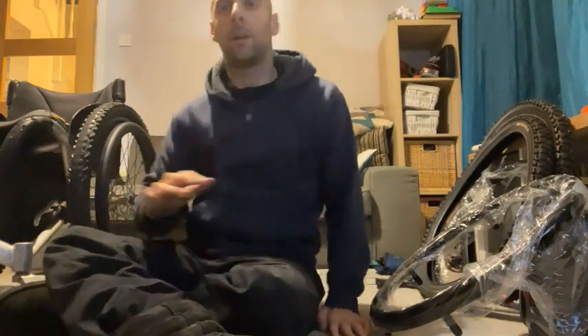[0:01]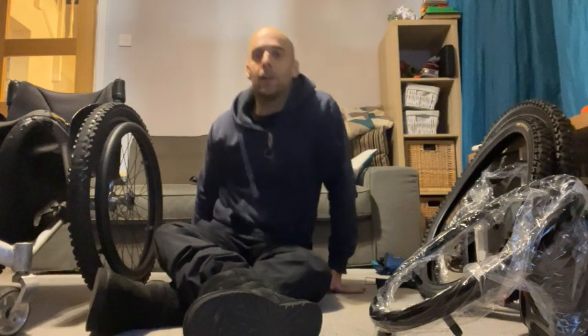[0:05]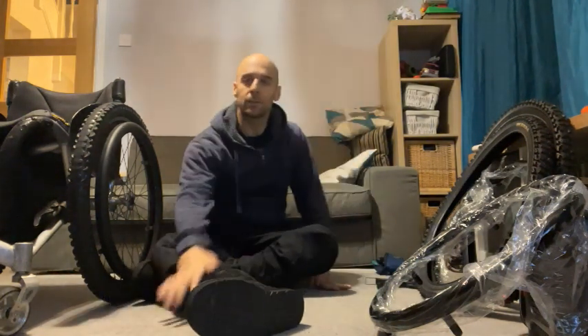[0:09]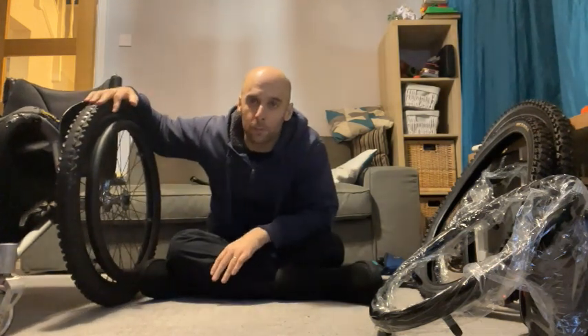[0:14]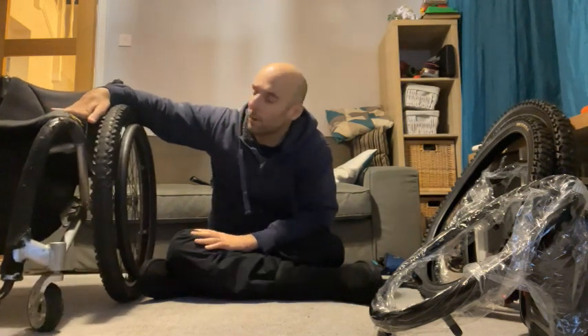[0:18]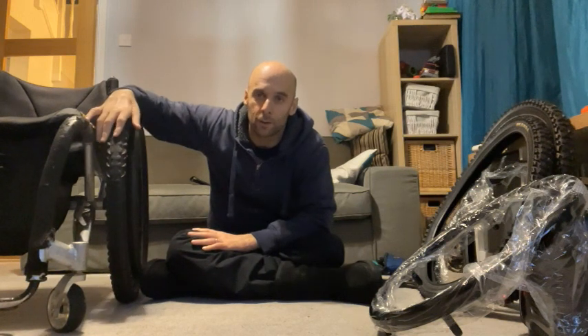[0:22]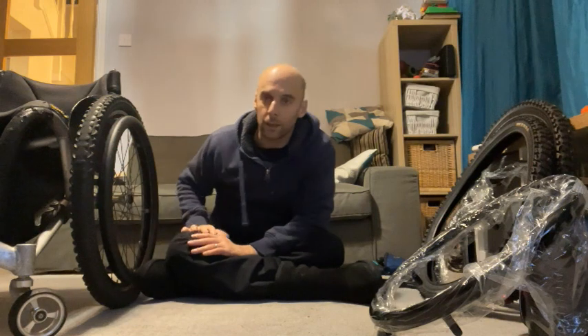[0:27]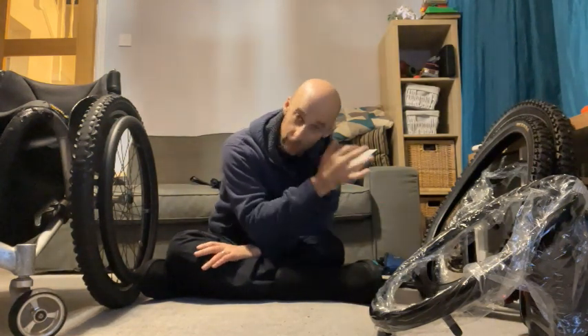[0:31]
Now, I've had a few inquiries whenever I post videos of myself in my wheelchair about the type of tyres and push rims that I put on my chair. So I've had these on for about 4 years now, and if you look at them closely, they're really worn. The tyres have had a good innings, but they're time to go. And there's a couple of little tiny nicks on the push rims, so I'm going to change both of them together. Got all the things that I need here to change them.
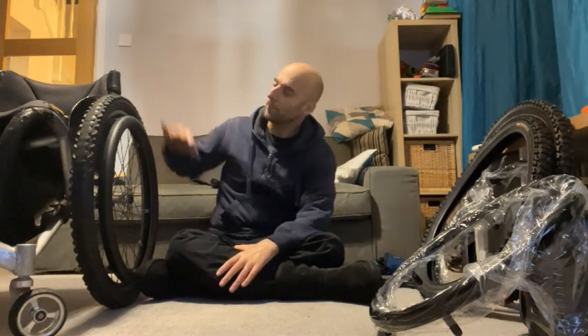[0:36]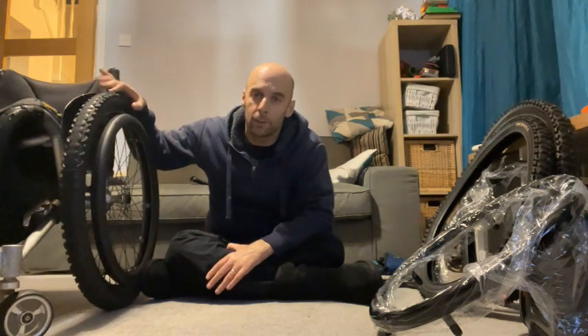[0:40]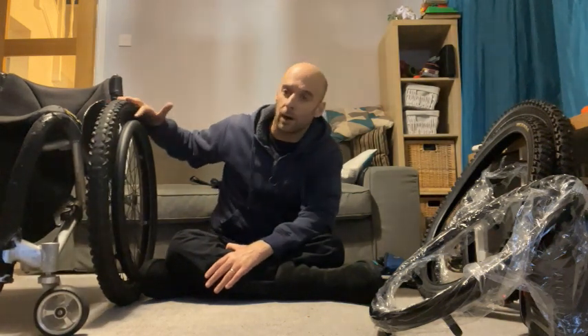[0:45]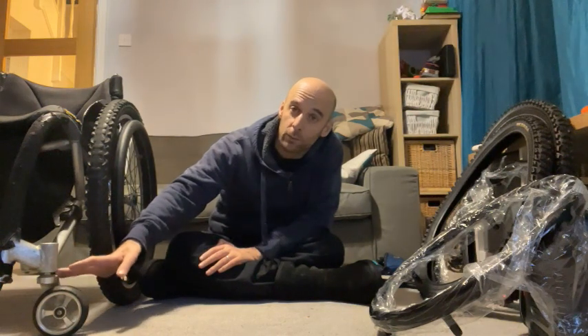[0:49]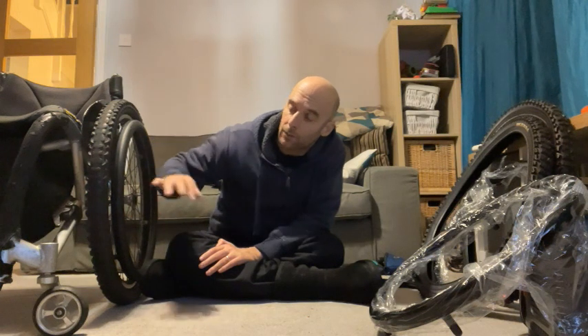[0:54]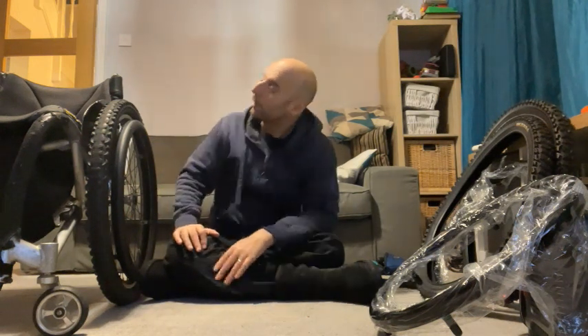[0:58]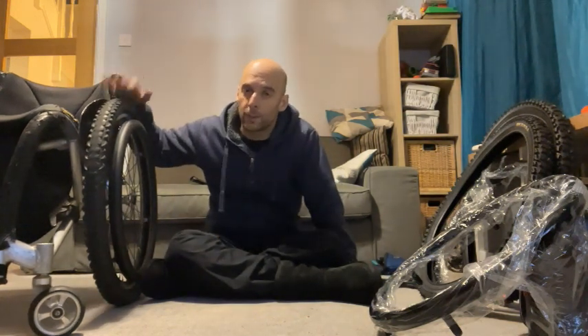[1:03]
A few people have asked what I use. So you can't just put a normal big knobbly chunky mountain bike tyre on a normal wheelchair, because if your chair is set up for a 24-inch tyre, then the casters, this bit here, need to be completely horizontal to the floor. Otherwise you're going to be angling the front casters down, and as soon as you get any speed you're going to get a really big wobble on the front wheels, or it's just not going to track properly. So you can't just buy a normal mountain bike tyre, which is normally a 26-inch. So you have to find 24-inch tyres.
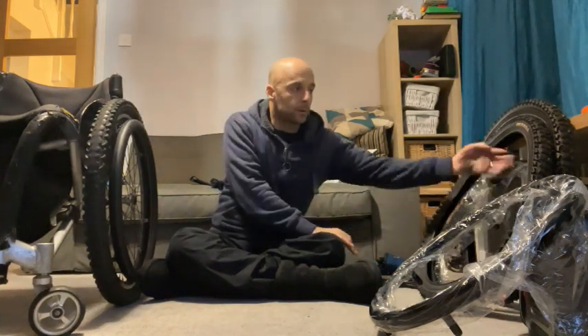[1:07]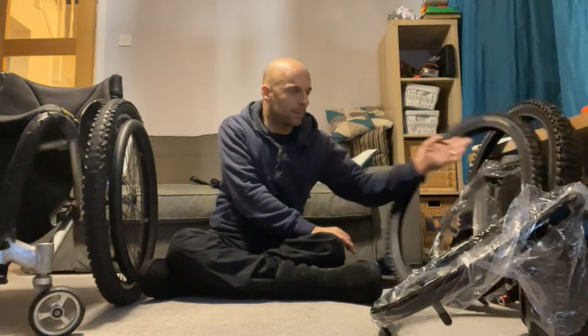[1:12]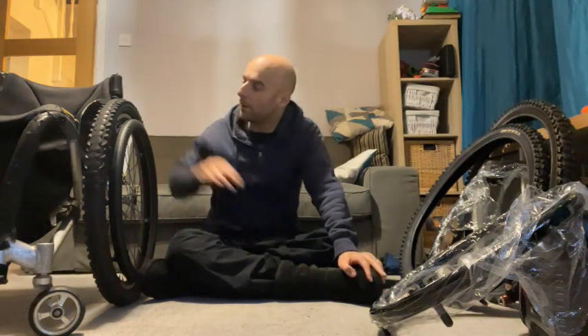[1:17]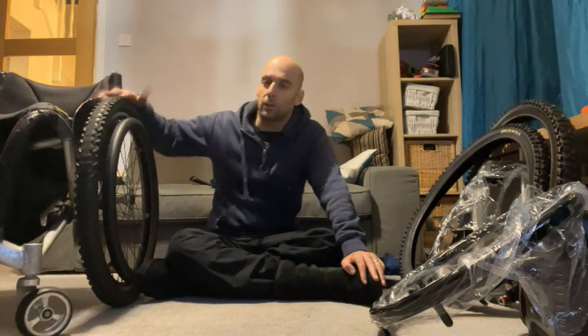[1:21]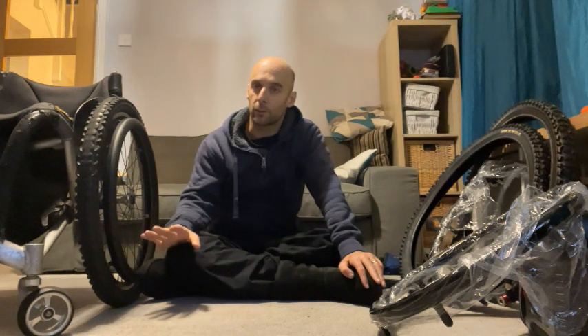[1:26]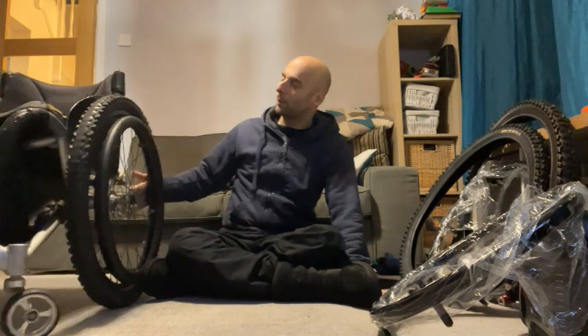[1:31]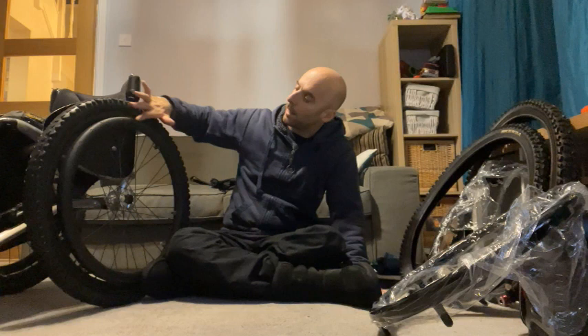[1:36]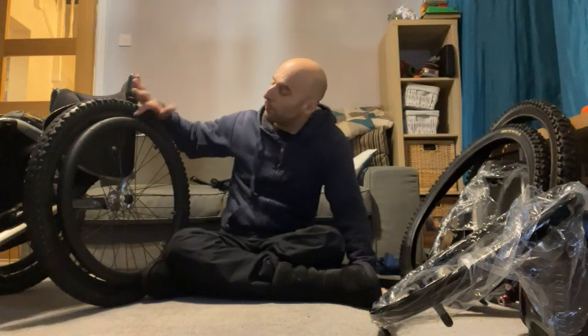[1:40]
So the ones I've got here with me are called Kenda. I think they're called a Kenda Space, but they are a 24 by 1.95 inch tyre. This will mean that the outside diameter is going to be 24 inches, so it's still going to work properly with my casters the way that they're set for a 24-inch tyre. The difficulty is that with a fatter tyre instead of a narrow one, you can't go for the same rim of the wheel. So you have to get the right size wheel rim for this tyre.
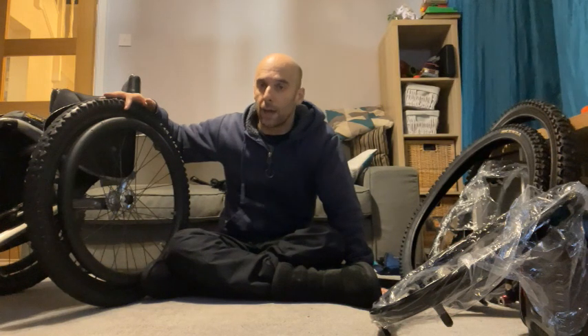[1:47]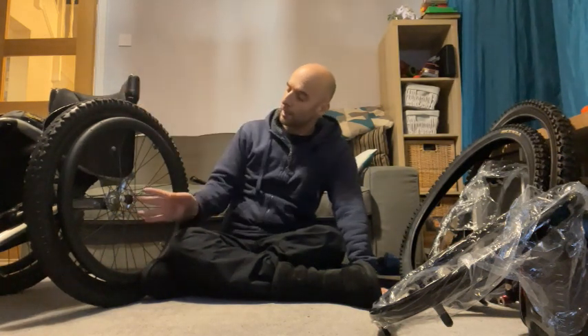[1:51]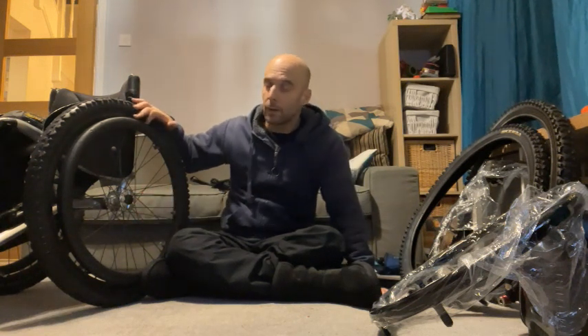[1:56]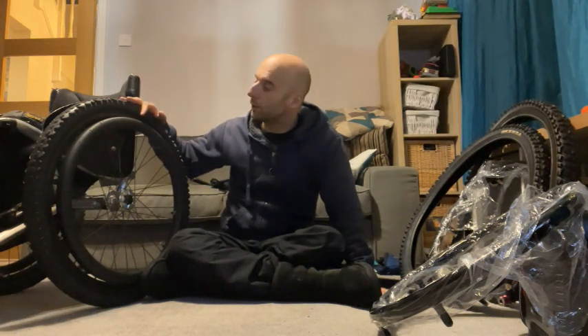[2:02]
Now it would vary on what rim type you get, dependent on what type of tyre you get. So you're going to have to speak to the bike shop about that one. You can take in your hub and you can take in your tyre and push rim, and you should be able to get a bike shop to put the right wheel rim on to fit the tyres that you want to use. But you need to get this size right.
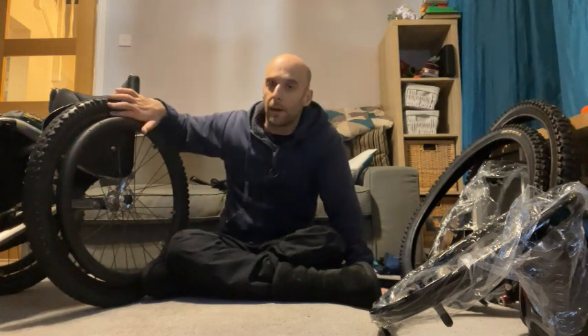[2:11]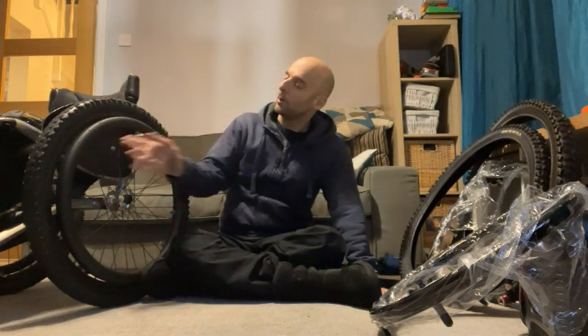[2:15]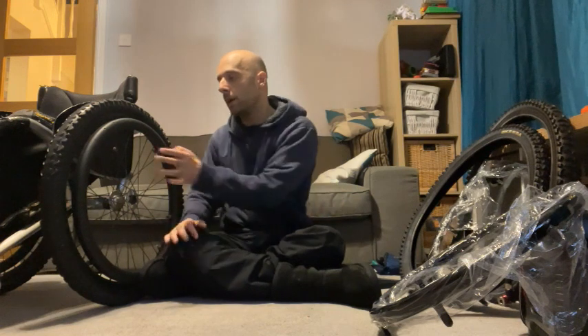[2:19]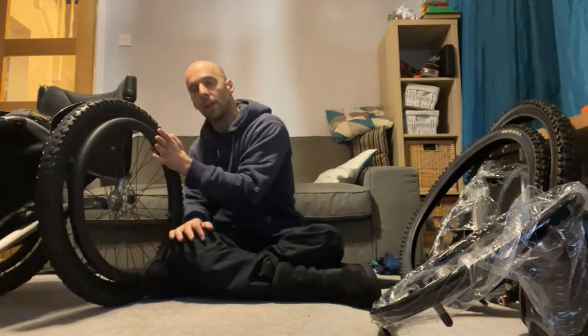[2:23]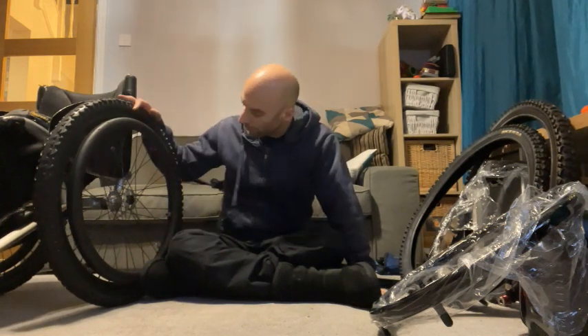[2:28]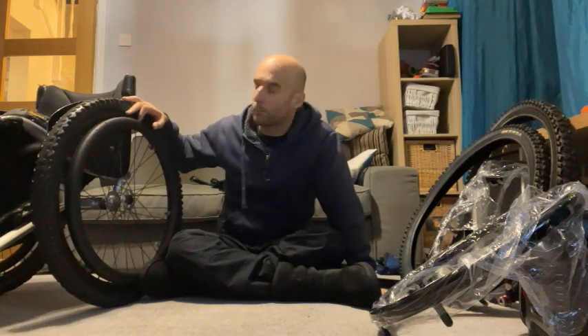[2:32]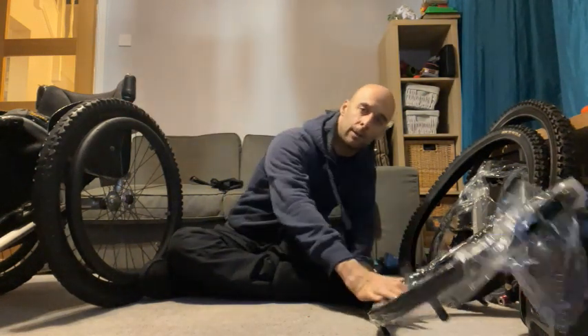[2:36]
I'm also using a Carbolife Tetra Curve L for my push rims. I really like these ones, they're the best ones I've found. They're a non-circular cross-sectional area push rim. It means you get a lot more grip pushing down this way, and also on the braking surface, which is a bit more flat here and is a bit wider. So I've found that they work really well. I've had these ones for about 4 years now, and they've got a couple of little nicks in from where I've just caught the skirting boards and the door frames, that kind of thing. So I'm going to change those at the same time. That's what I've got here.
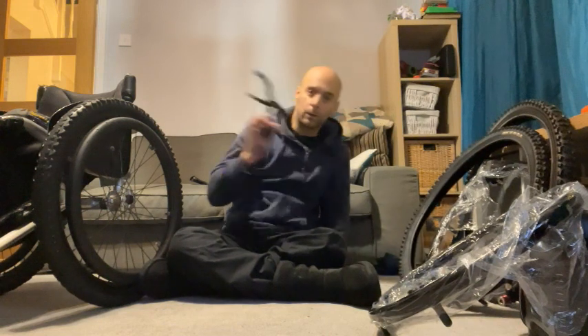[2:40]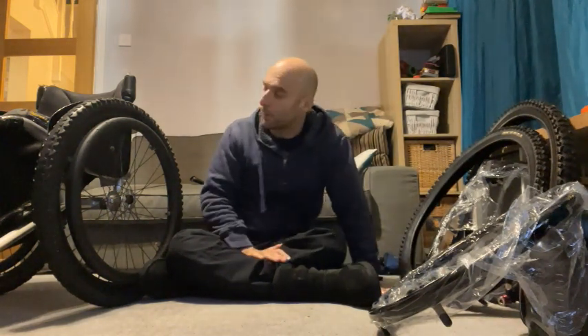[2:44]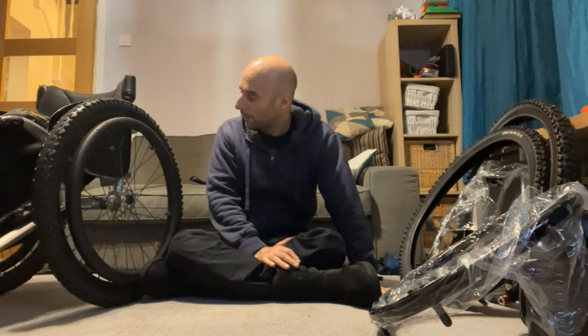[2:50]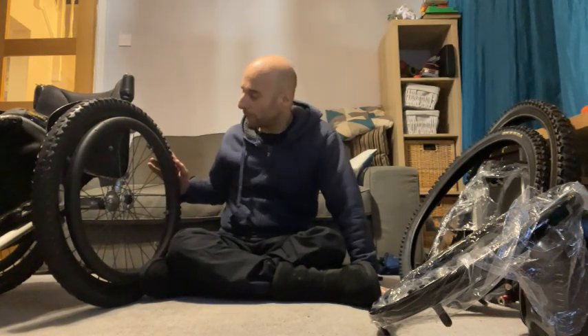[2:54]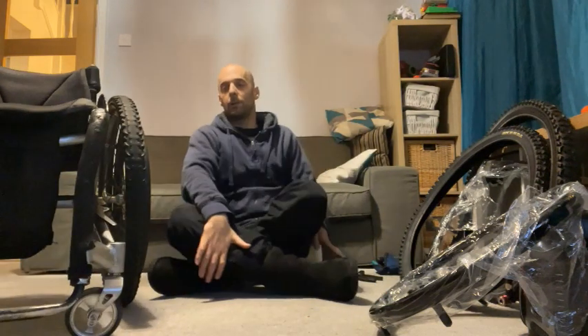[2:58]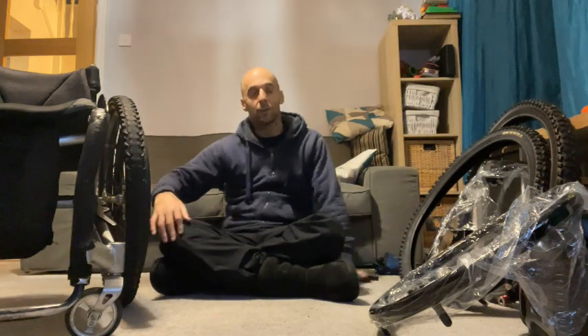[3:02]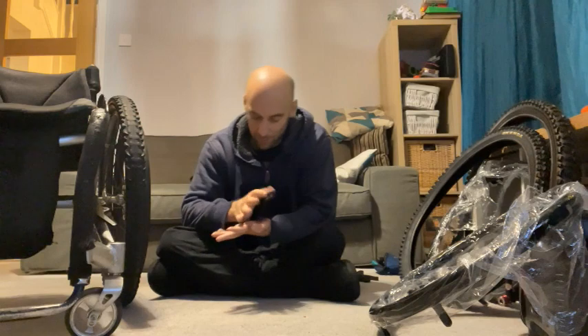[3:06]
Got my compressor, got my tools, got my tyre tool here. I'm going to put the TV on. It's going to take me a while, and I'm going to hopefully get through this on both wheels, and you can watch me do the whole process. And hopefully we'll have some new tyres on, which will work well, and some new rims, which will be nice for the new year. Right, off we go. Excuse me if I put the TV on in the background, but I expect a lot of this will be fast forwarded because nobody wants to watch this at normal speed.
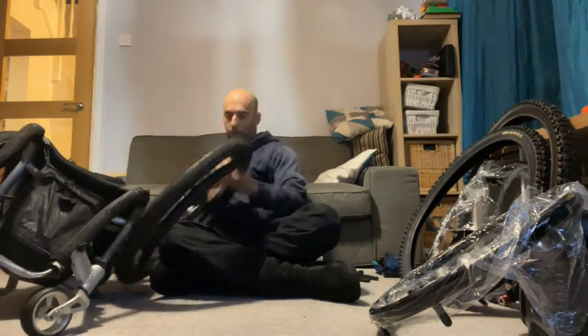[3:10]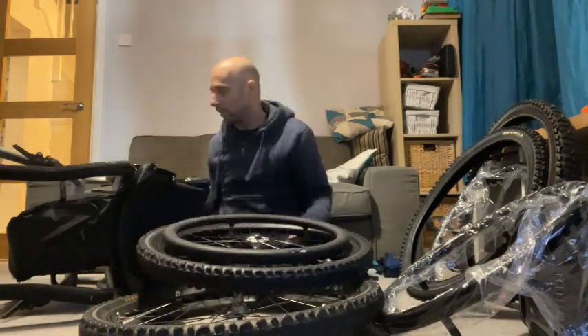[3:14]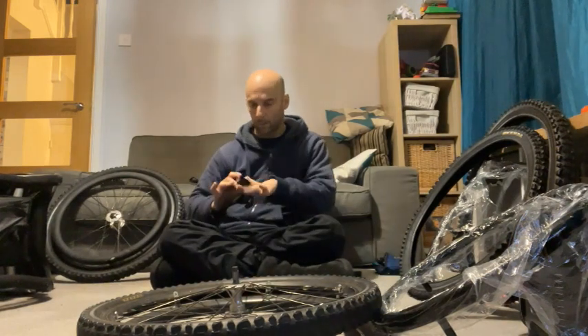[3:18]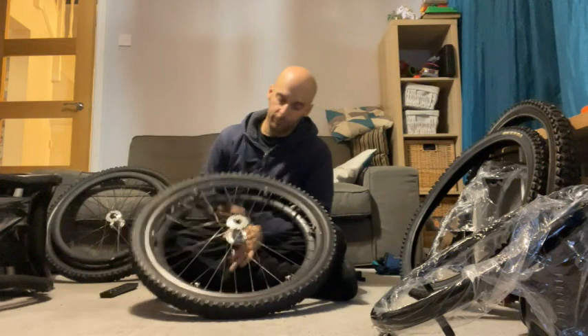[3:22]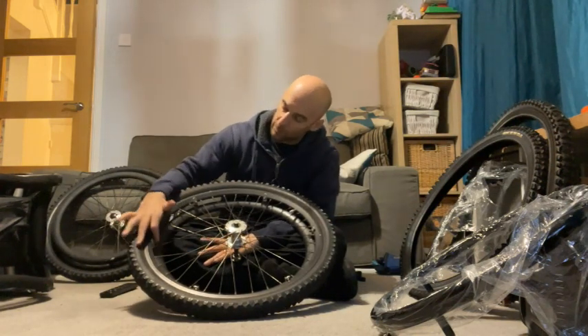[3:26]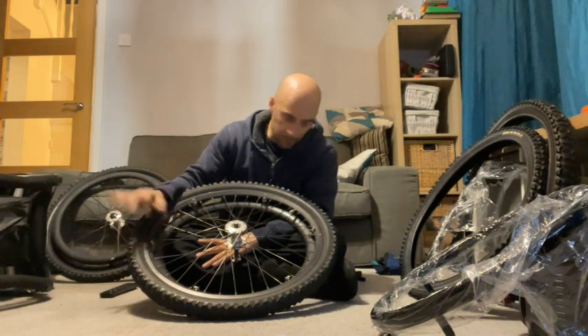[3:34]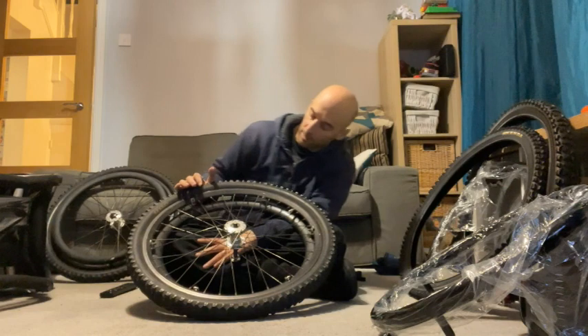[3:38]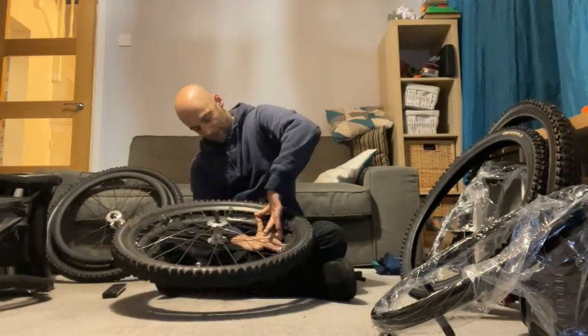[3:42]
Right, we have to start by deflating this tyre, taking off the tyre so we can get at the rim on the inside, because you'll need to get to the bolts on the other side of this wheel rim. So the whole tyre is going to have to come off, and the inner tube, and then we're going to have to undo these bolts, take them out, put the new ones on. It's quite a complex and time consuming process, but hopefully it'll all work fine. It's not the easiest thing when your hands don't work very well.
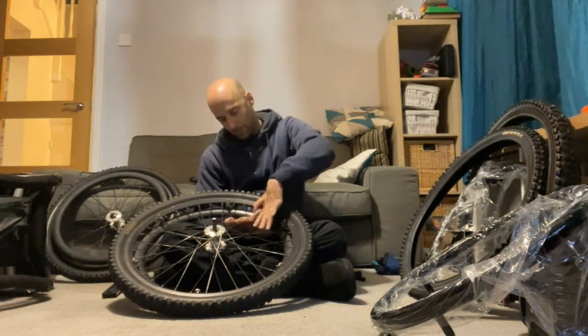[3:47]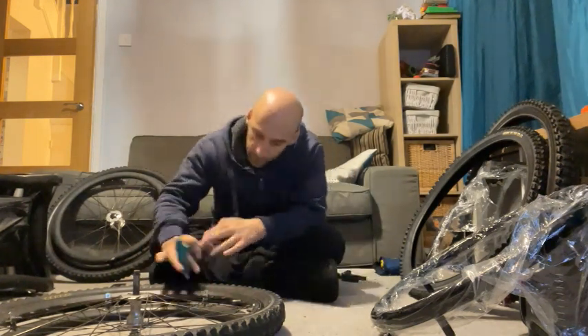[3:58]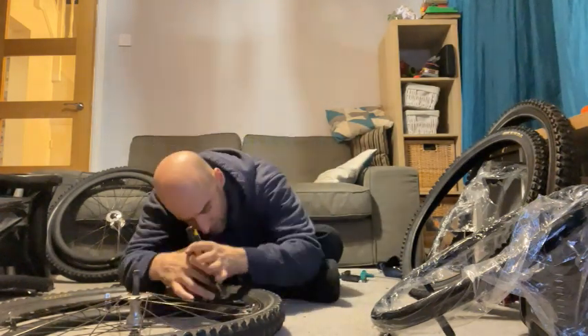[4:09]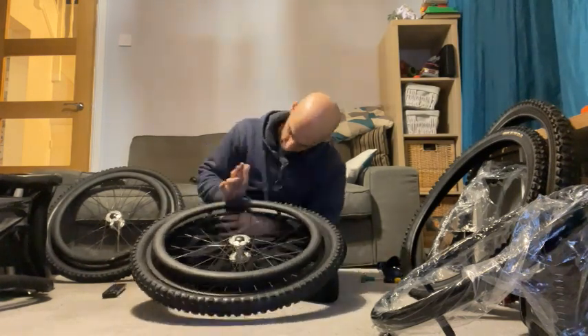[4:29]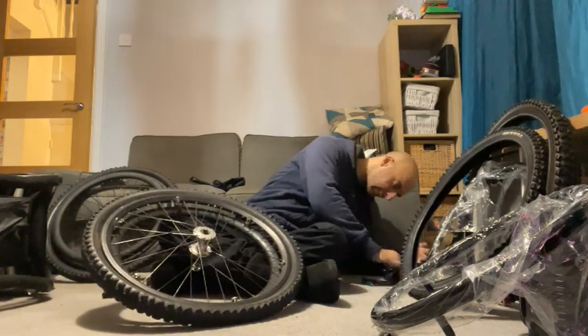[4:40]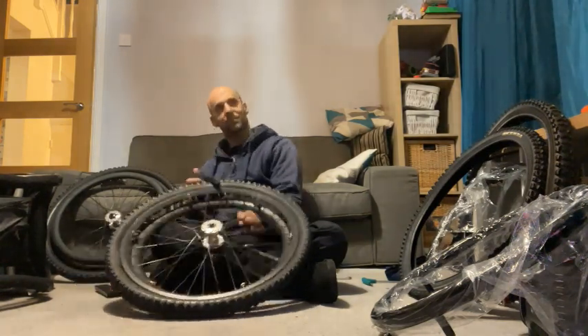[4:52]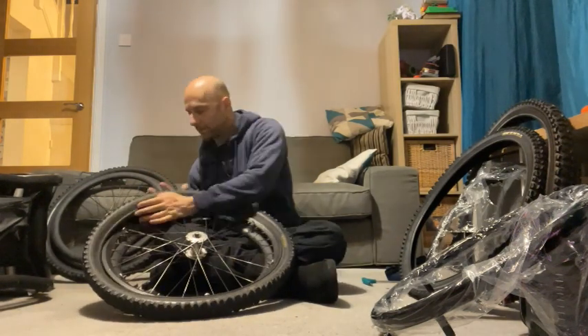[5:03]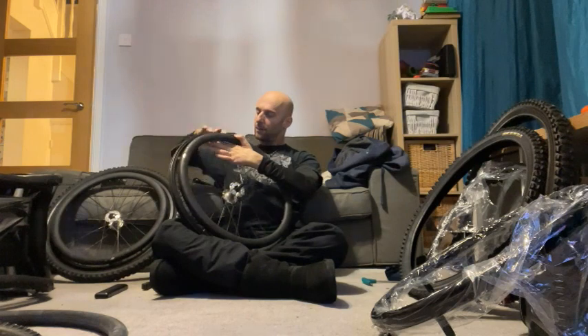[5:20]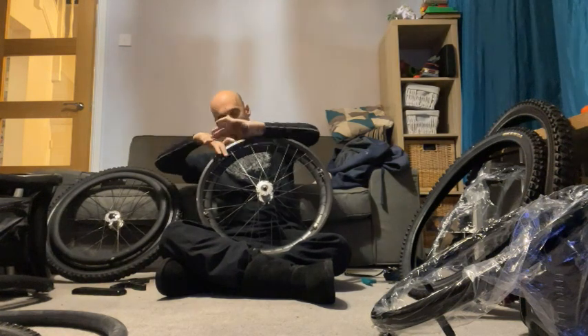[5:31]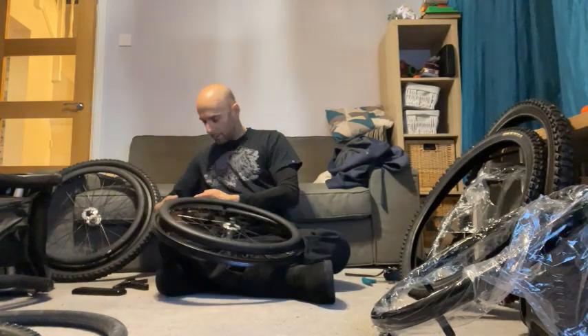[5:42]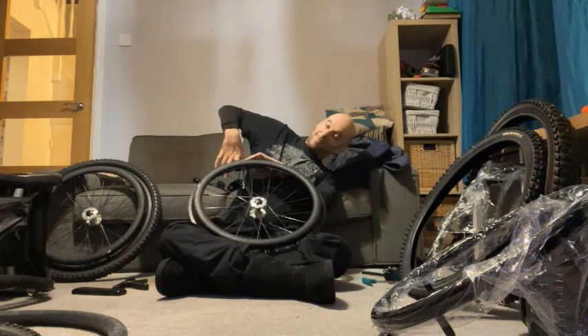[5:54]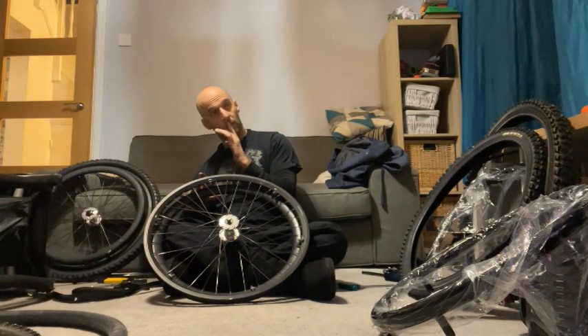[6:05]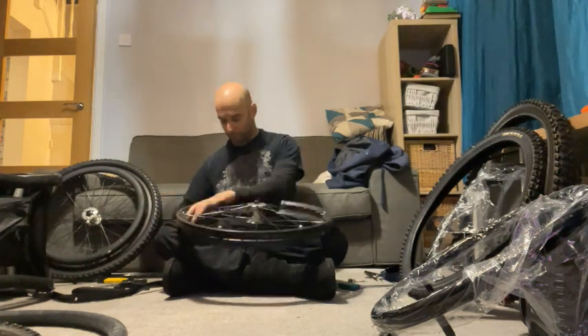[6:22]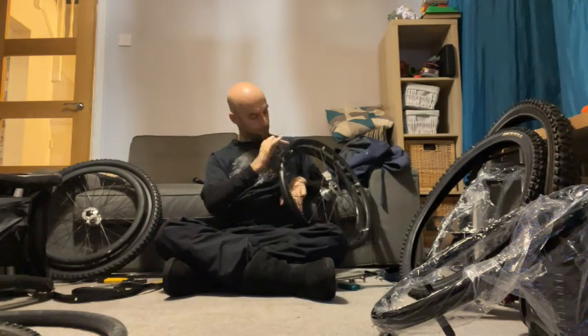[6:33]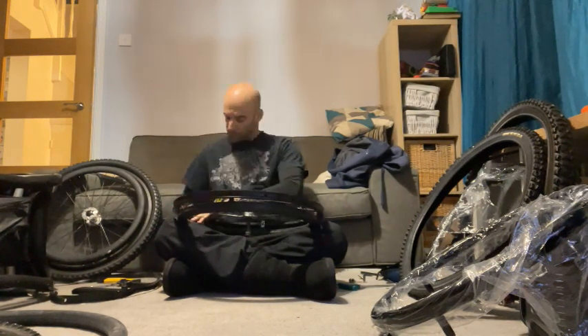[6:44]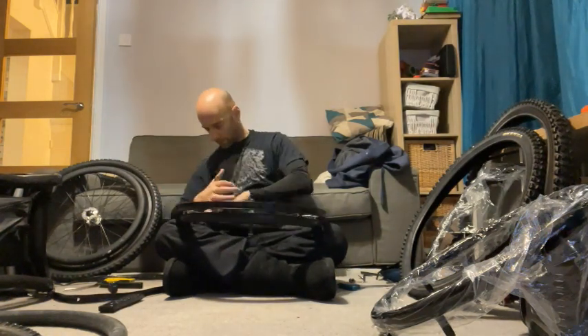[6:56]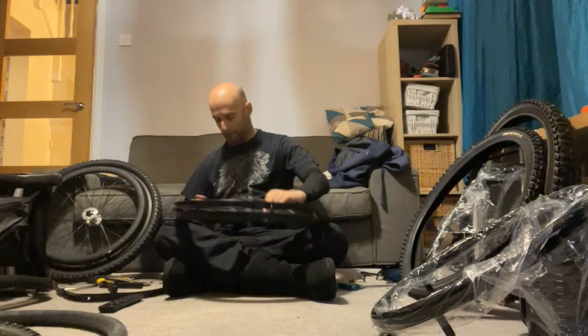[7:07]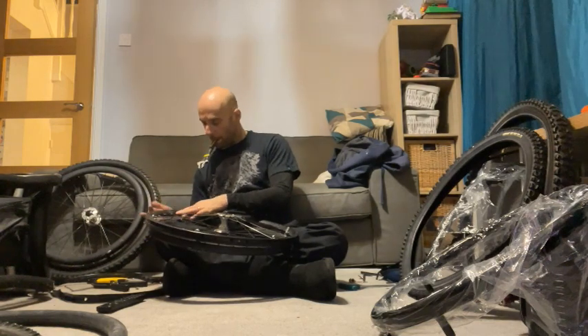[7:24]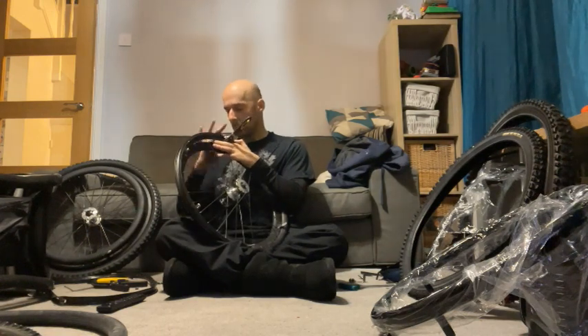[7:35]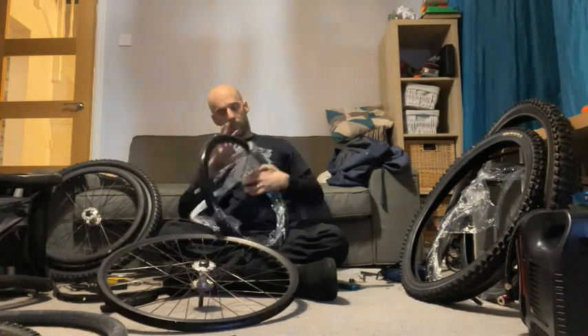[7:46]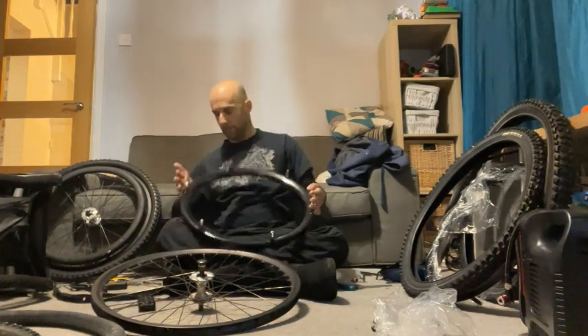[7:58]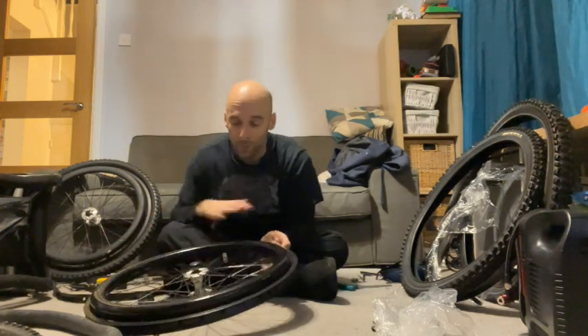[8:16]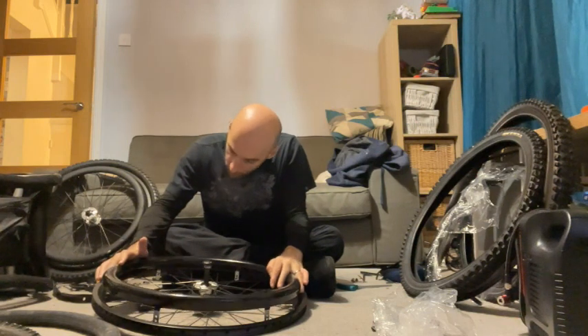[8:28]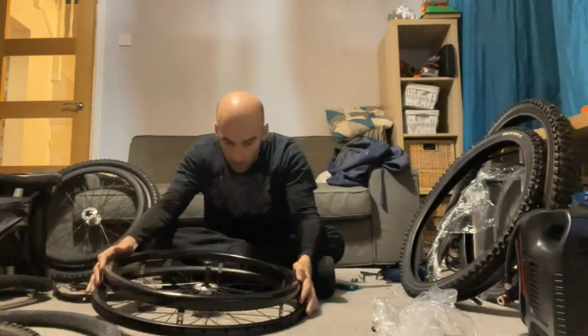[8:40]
So when we get these, we need to measure them up against the holes, making sure that the outside is the right way around. You don't want to put this on the inside and then realise that you've got your hub the wrong way around, because there's no changing that. So make sure that you've got your push rims and that they're going to line up there. There's 2 holes in there. I'm going to use the inside hole so that they don't stick out quite so far, and it will fit in slightly inside, but you might have to slightly bend some of these aluminium rims just to make them fit, but that's okay, that's all right to do. Then we can go and put the other bits back together.
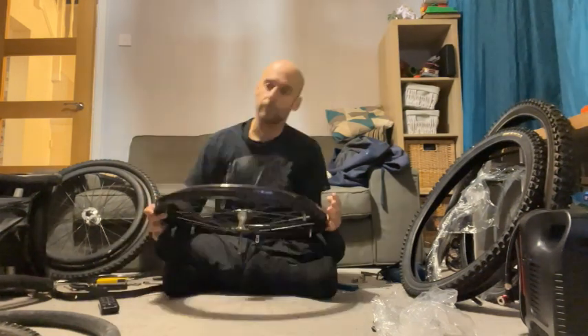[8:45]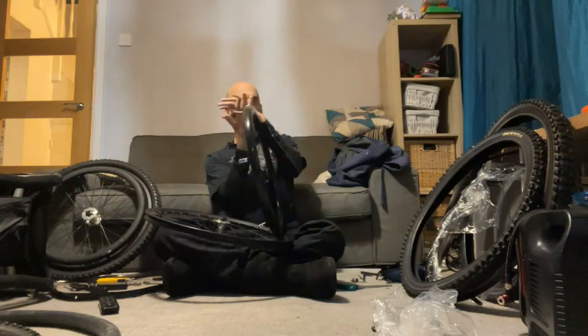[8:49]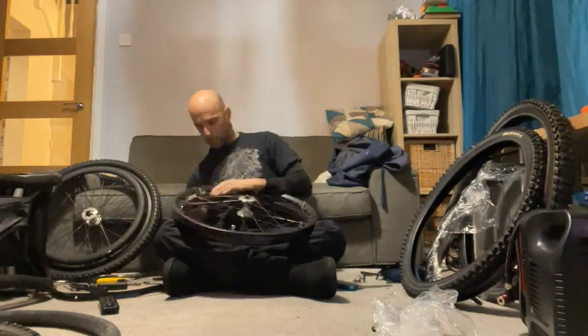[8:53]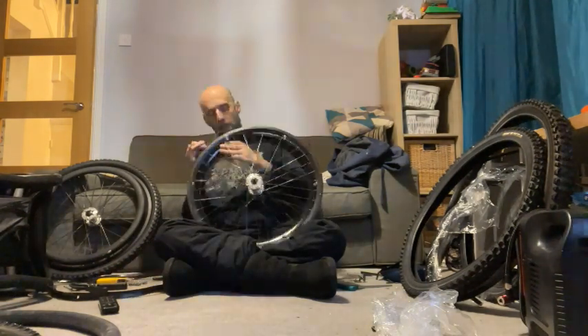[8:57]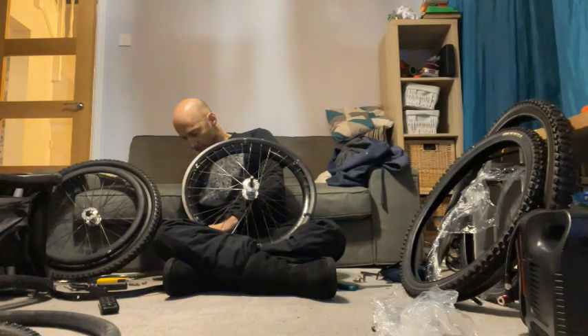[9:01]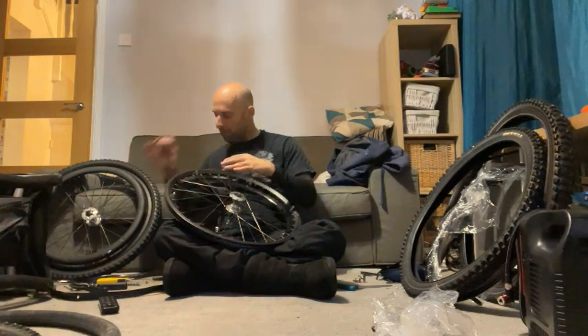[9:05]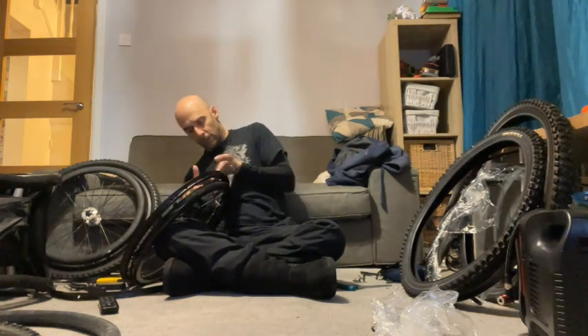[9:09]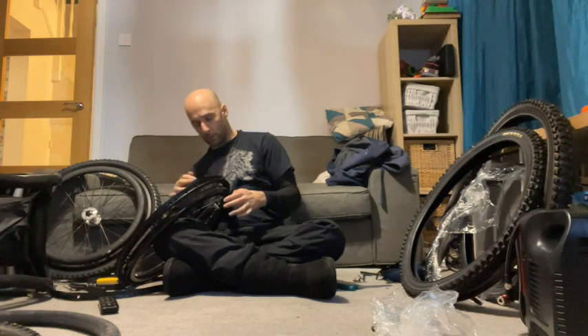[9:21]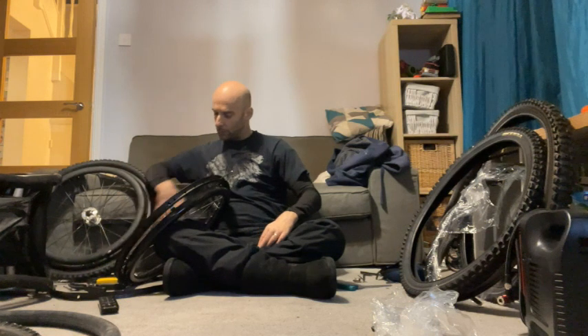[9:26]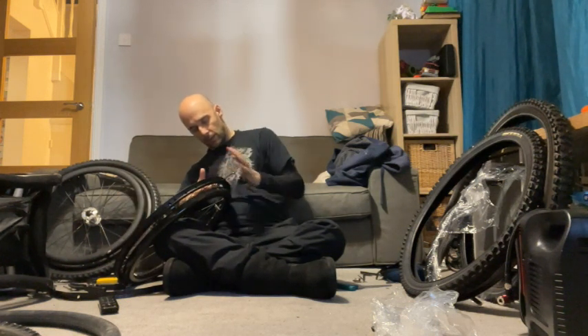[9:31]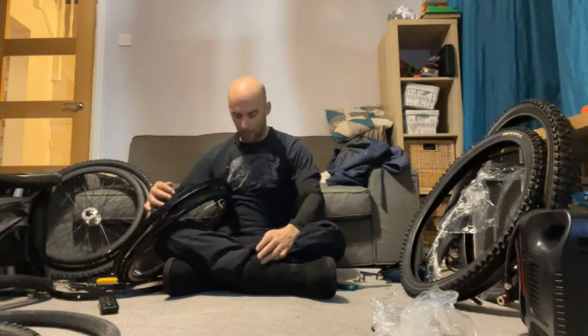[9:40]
Now these are pretty fiddly, particularly if you haven't got 2 working hands, so it's going to take me a while to do these. I do like to do it on my own though, even though it takes a long time. When you put these on, I recommend you don't do the first few up really tight, because you need to make sure that it's evenly distributed around the rim. So just put them on so that they stay, using your Allen key, and you can finger tighten them as much as is possible, and then do all 6 and then come back around and tighten them all when they're all in the right place.
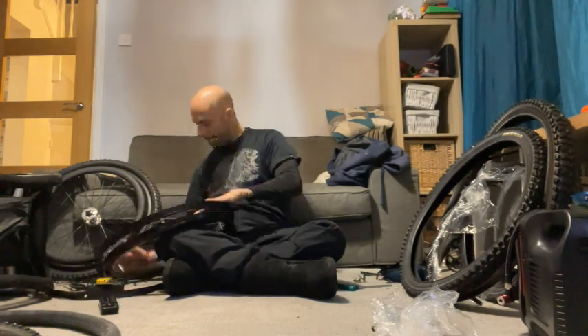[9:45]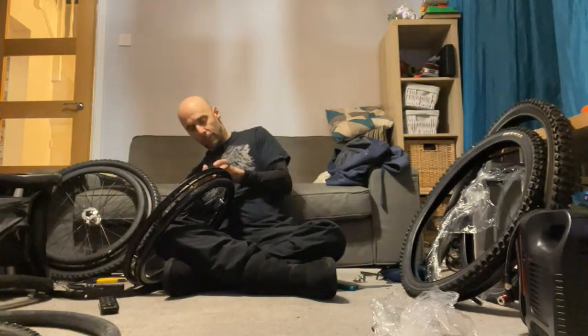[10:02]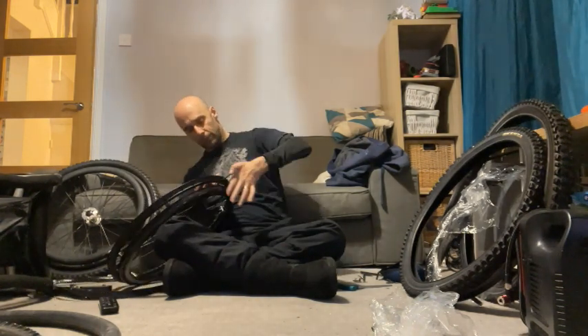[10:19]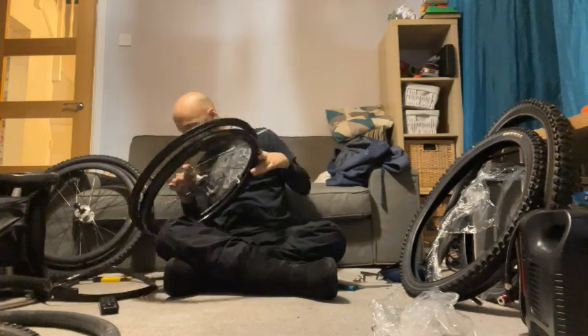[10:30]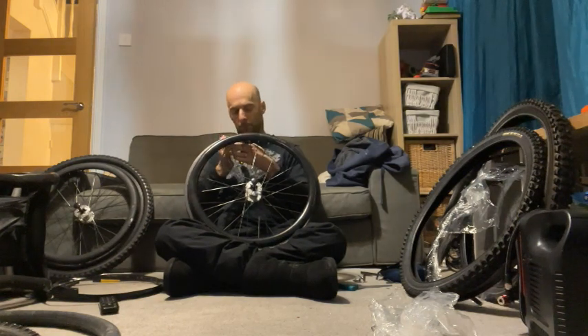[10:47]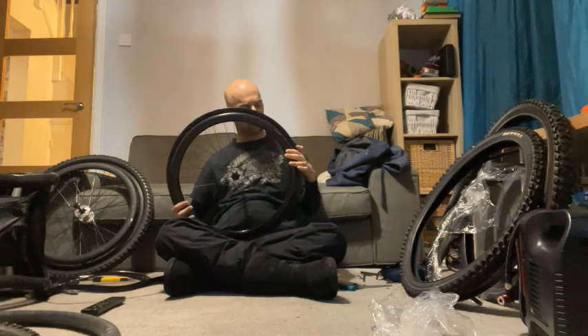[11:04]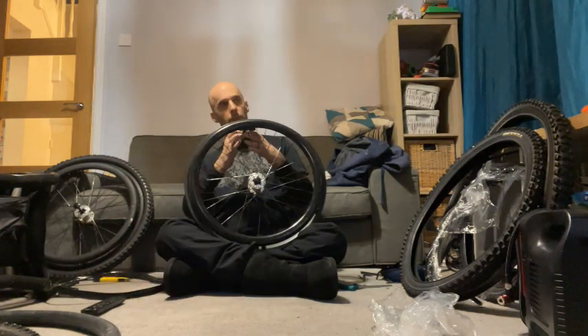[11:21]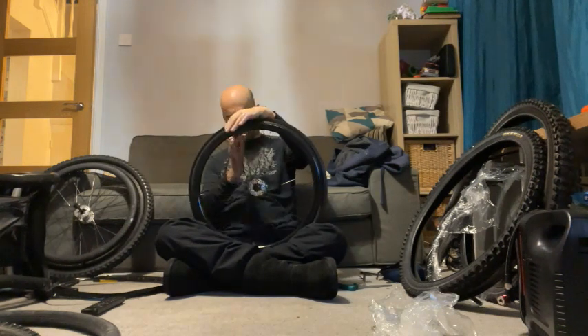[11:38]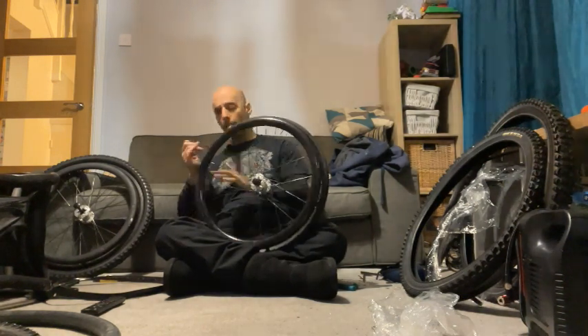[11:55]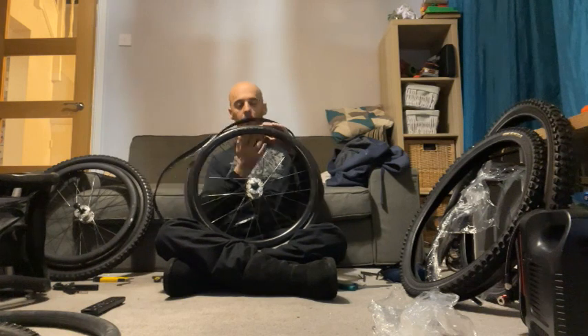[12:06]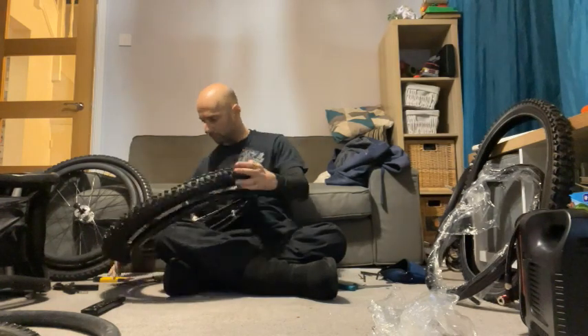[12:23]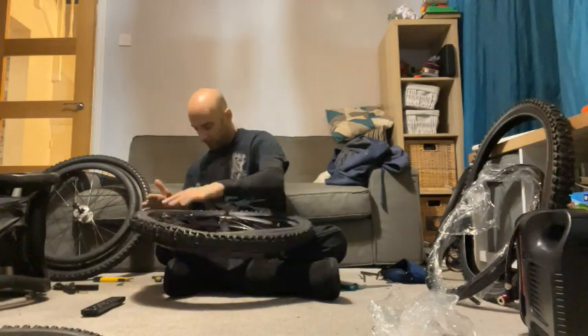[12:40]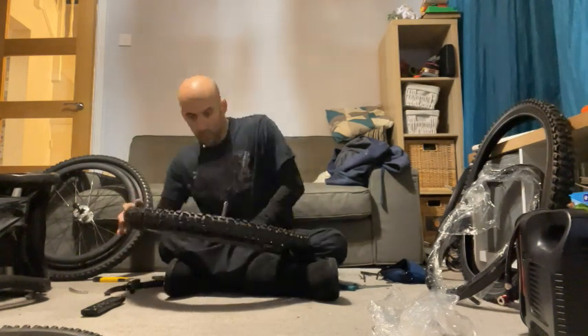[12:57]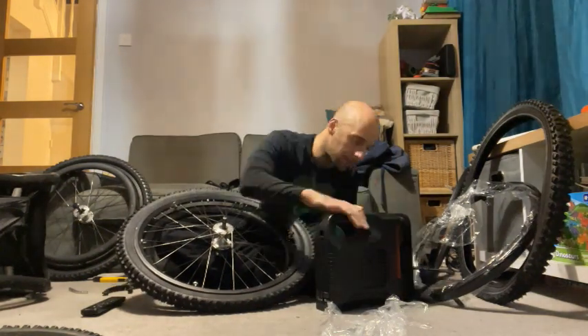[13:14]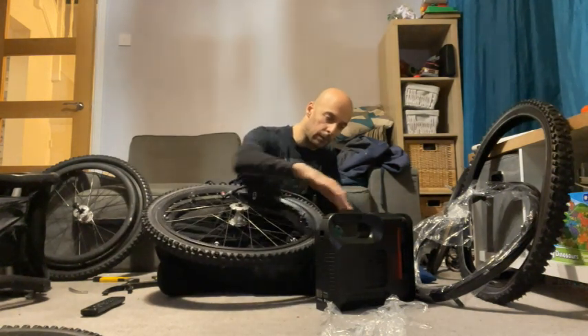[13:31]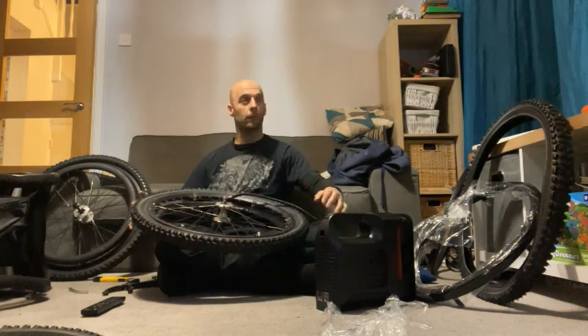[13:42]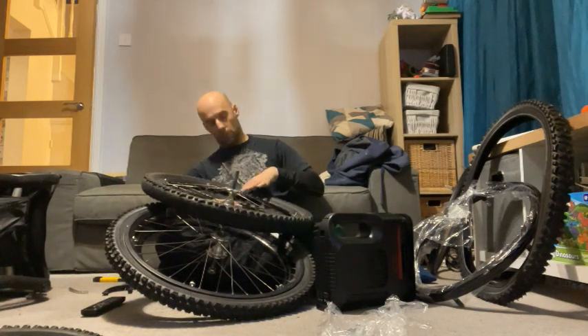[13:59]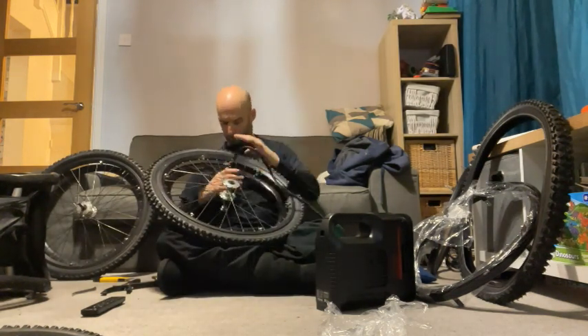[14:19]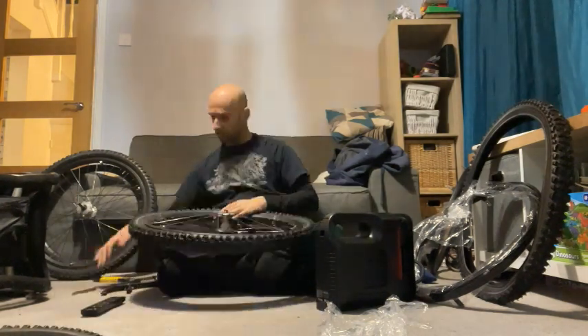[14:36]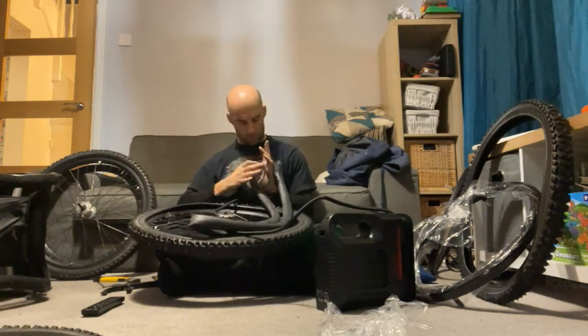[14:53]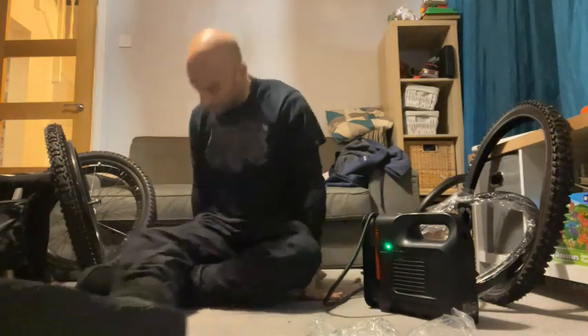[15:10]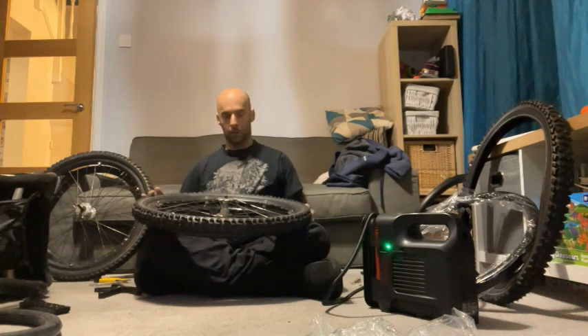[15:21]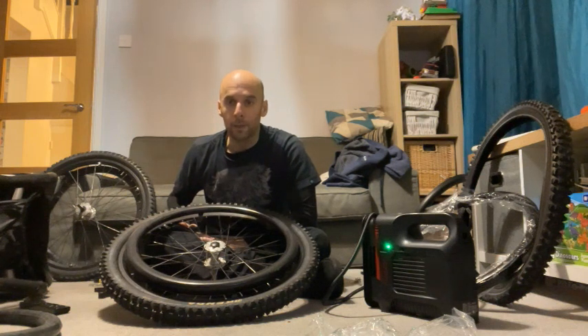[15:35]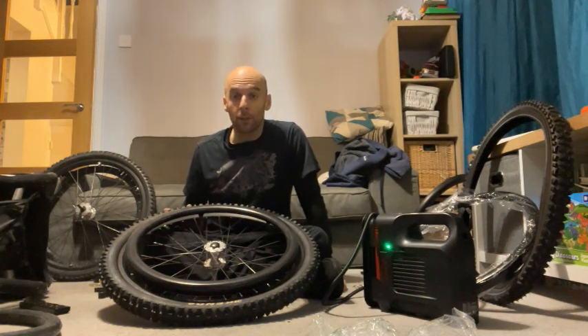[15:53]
Right, and that is the first wheel finished. That was a bit of a faff because I had to change an inner tube halfway through. I think the inner tubes have been in for probably as long as the tyres were, so that one had kind of got a bit thin, so as I changed it I must have nicked it somewhere. So I had another inner tube luckily with me on the seat box of my chair, so it's all finished now. And now I'm going to put the two wheels on and go and get another inner tube in case the other one also needs changing.
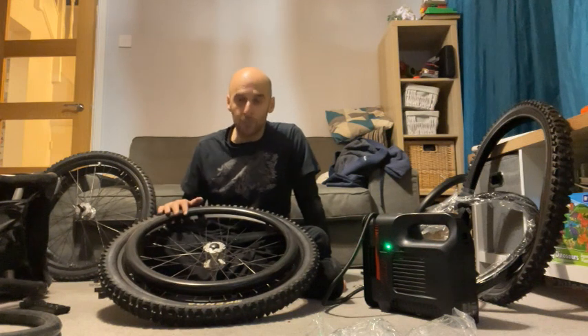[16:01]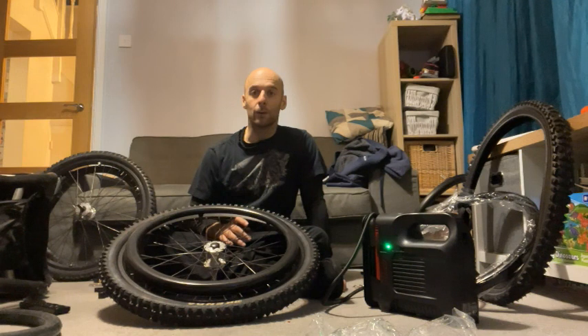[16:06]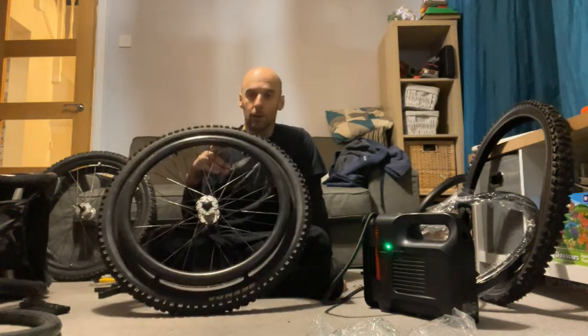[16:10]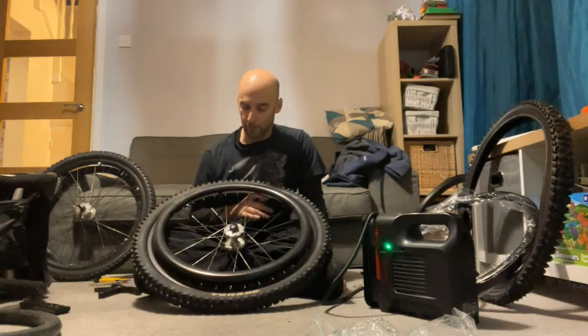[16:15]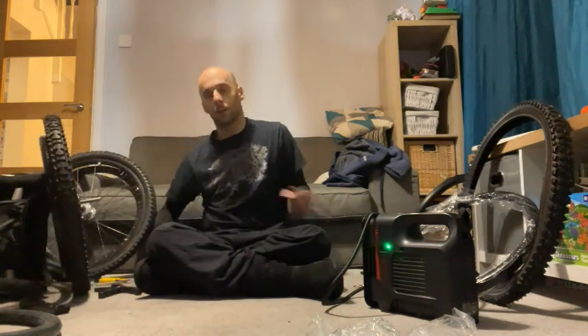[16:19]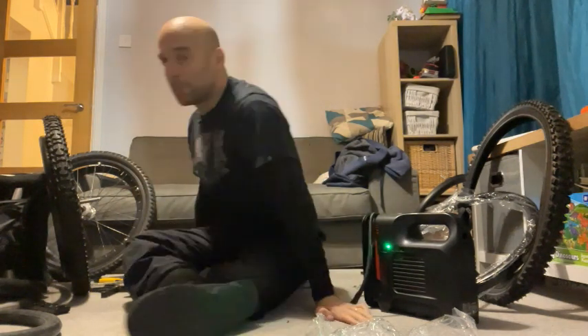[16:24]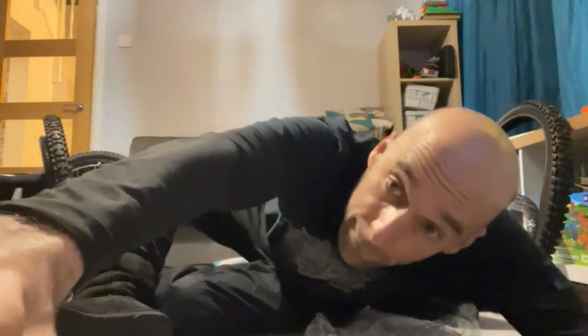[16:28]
It's been a long job, about an hour and a half so far, and that's the way it is when your hands don't work very well. But I like to do it myself, and I will go and get the other bits and do the other wheel. So there we go, one done. Hope that was helpful for anyone who wanted to know the information about that. And now it just needs for me to go and do the other wheel. Maybe I'll get a snack while I'm out there.